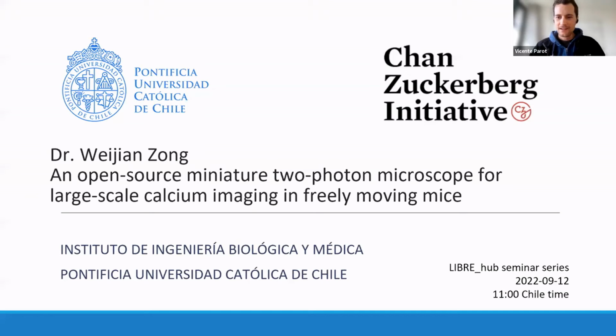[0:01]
Today, I'm thrilled to present Dr. Weijian Zong. So, Dr. Zong holds a degree in electrical engineering from Peking University. He did his PhD, obtained in 2017, where he focused on developing imaging technologies for neuroscience. He's currently a researcher in the Moser Group at Kavli Institute for Systems Neuroscience.
In the past few years, he led the development of free versions of miniature two-photon microscopes to record neuronal activity in freely moving rodents. Besides the miniature 2P microscopes, he also developed a series of other advanced fluorescence imaging tools across broad topics. His current research is developing all-optical approaches for characterizing functional connectivity in the medial entorhinal cortex. Dr. Zong also holds 6 invention patents in optical imaging.
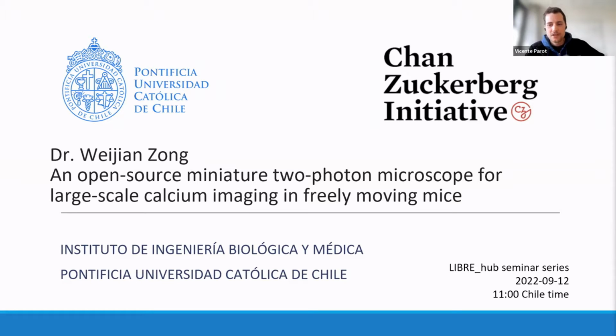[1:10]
His work on developing a new generation of miniature 2P microscopes was selected as China's top 10 scientific achievements in 2017. He has received awards such as the Shizan Pai Young Biophysicist Award in 2017 and became a Marie Sklodowska-Curie Fellow in 2019. So I'm very pleased that we have the opportunity to host his talk in this seminar, where he will talk about this open source miniature two-photon microscope for large scale calcium imaging in freely moving mice.
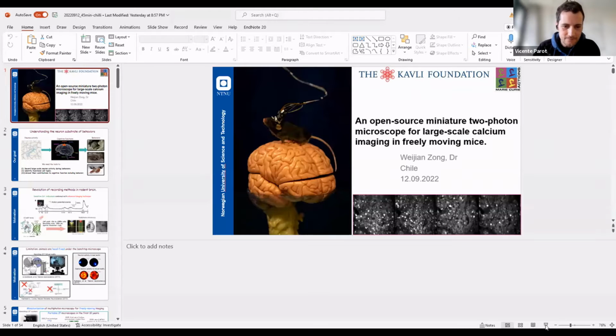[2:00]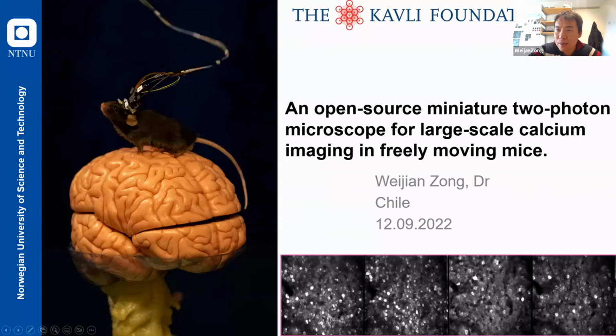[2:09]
Okay. We can see your PowerPoint screen now. Yeah. Can you hear me? Yes, we can hear you well. And now you see the slide, correct? Excellent. Go ahead. Thank you for the introduction, and so sorry for this mistake of the time zone problem, but I hope that the people who are interested can see the presentation later.
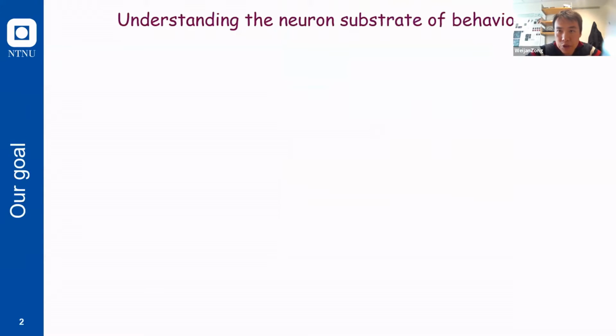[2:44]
And so it's my great honor to present our recent work on the development of this miniature microscope that can be used in the freely moving mouse. So I will start by introducing the purpose of why we want to make such a thing small.
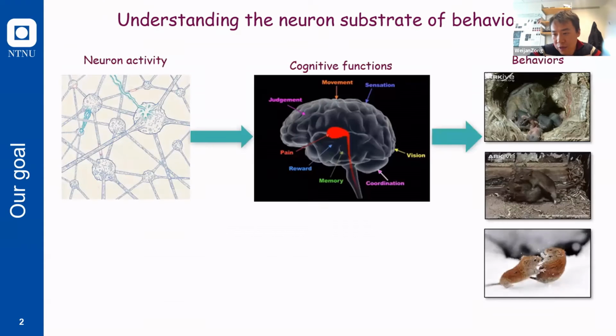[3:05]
So I think one of the major goals of 21st century neuroscience is to understand the neural substrate of behaviors. And most of the neuroscientists now have agreed that the behaviors,
Maybe I should have a pointer somewhere. We can see your mouse pointer. Oh, you can. Okay, great. Yeah. You can see the mouse here, right?
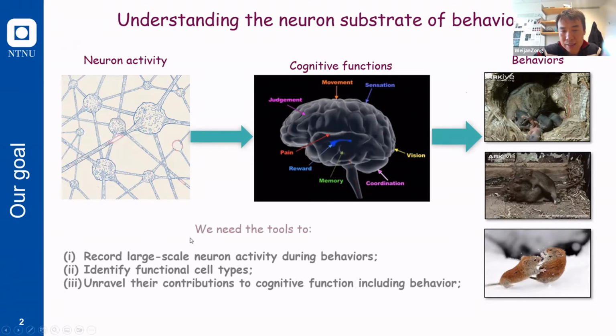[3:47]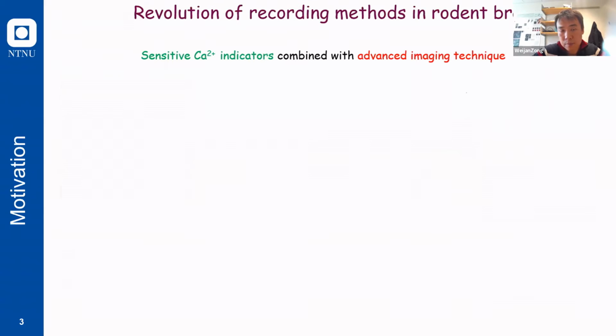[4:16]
Yes. Perfect. Okay. So the complex behaviors of mammals, such as mating, fighting, and social interaction, are generated by the functional brain, which in turn is produced by the activity of millions of neurons. Therefore, in order to understand the neural substrate of the behaviors, we need to record large-scale neuron activities during behaviors, and then identify the functional cell types, which means how these neurons are firing or tuning to specific behaviors, and then we can unveil their contribution to this cognitive function, including behaviors.
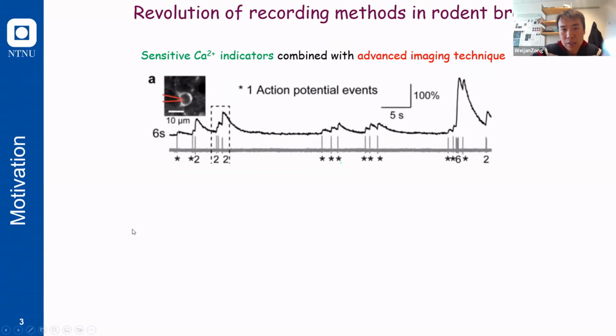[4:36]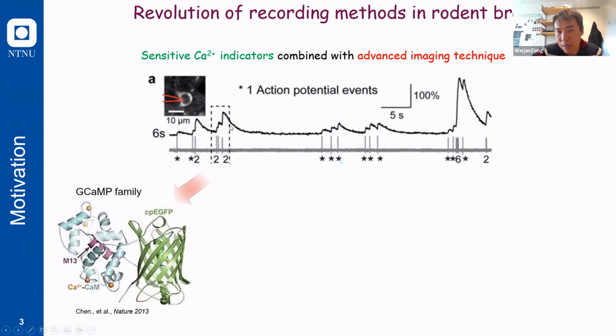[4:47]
So, therefore, scientists have looked for methods that record large populations of neural activities in the rodent brain for decades. And one attractive way to do this large population recording is calcium imaging. So the action potential of the neurons can induce an increase of the calcium concentration in the cell body. And this increase of calcium concentration, which is called a calcium transient, can then be reported by a sensitive calcium indicator, such as the famous GCaMP family.
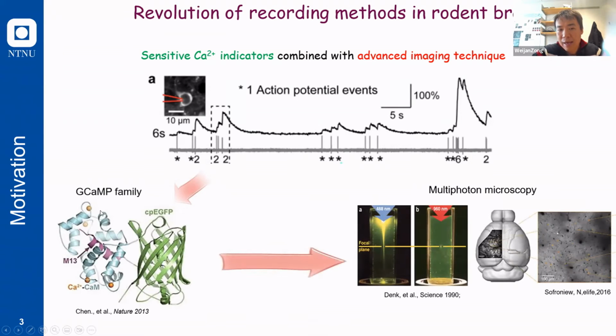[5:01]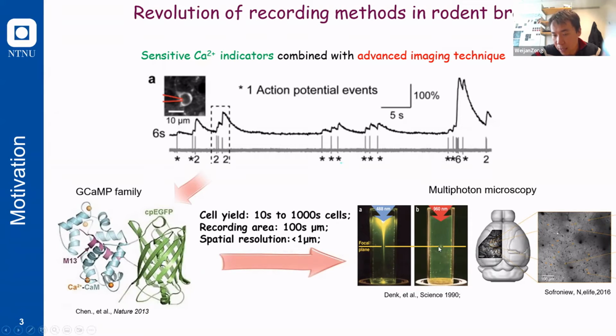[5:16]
And then the fluctuation of the signal from this calcium indicator can be recorded by the state-of-the-art microscope, such as the multi-photon microscopes. And you can see that the resolution of the multi-photon microscope is really high because it limits the background signals from the out-of-focus plane. So this is the one-photon focus, where you see a lot of signal in the background, and this is the two-photon focus, where there are no signals from the out-of-focus plane, which gives you really high spatial resolution and good optical sectioning capabilities. And then the cell yield of this method can be over thousands of cells with a spatial resolution that is less than 1 micrometer.
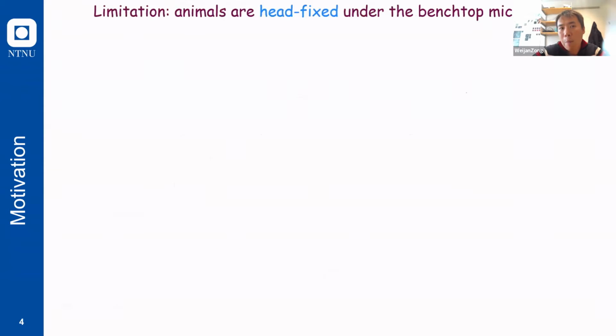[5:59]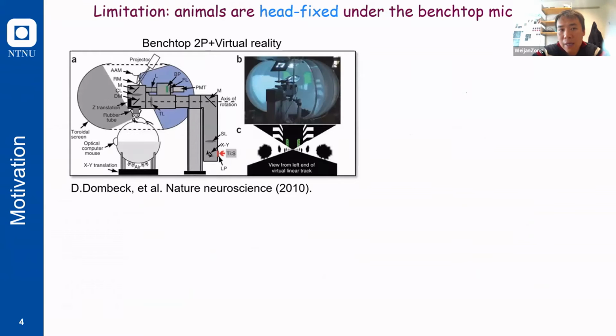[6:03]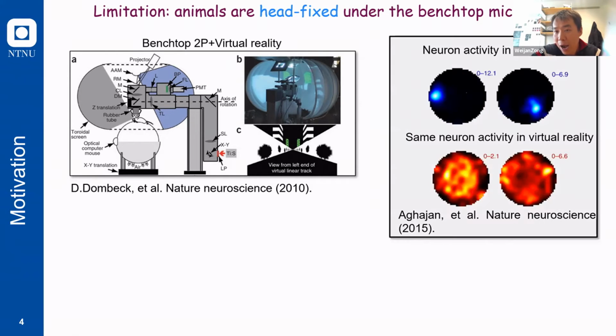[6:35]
However, one biggest limitation of the traditional multi-photon microscope is that the system is really complex and huge. So the animals had to be fixed under the microscope while the recording is ongoing. And to mimic the real environment that the animals experience, researchers usually build a virtual reality surrounding these systems, so that they can mimic the environment that the animals experience every day. However, people have found that even if you can build a virtual reality, the neural activities in the real world are quite different from those of the same neurons in this virtual reality.
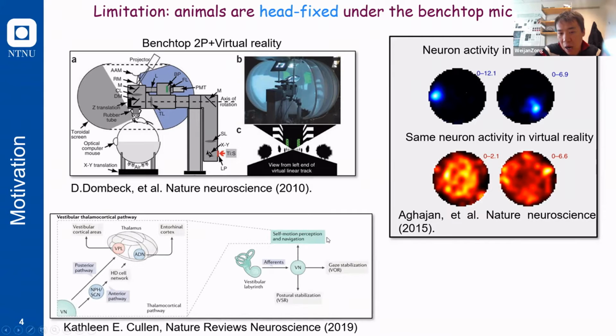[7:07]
You can see these two examples, which are place cells in the hippocampus, which have a very clear firing field in the real world, but their firing is much more messy in virtual reality. We believe this is because when the animals are fixed, you actually remove a lot of sensory input, such as vestibular feedback from the ear or all of this whisker touching.
And your head direction system is also not working because the animals are fixed. The animals cannot freely move their heads. So this network doesn't give any input to the space representation. And all of that makes this firing in virtual reality totally different from the real world.
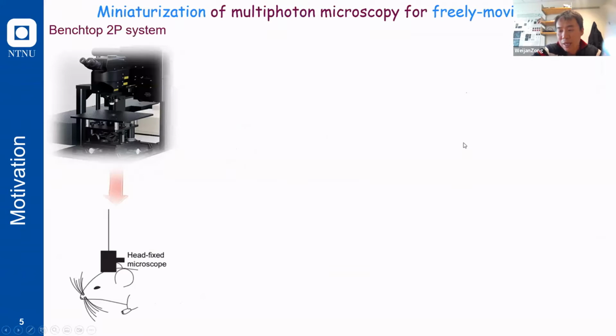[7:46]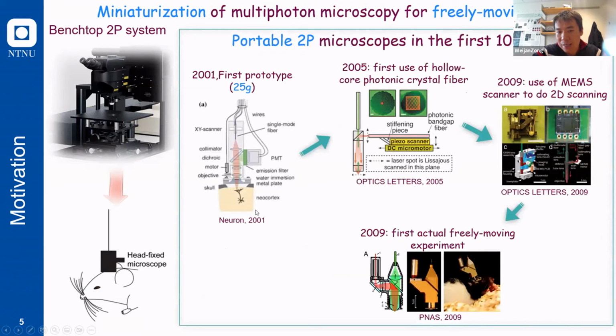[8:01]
Therefore, scientists started to develop the miniature microscope that can be mounted on the head, so the animals can freely move in the environment while we record the activities. And the story started in 2001. The first prototype was published by the Denk group, which are the pioneers of the two-photon microscope.
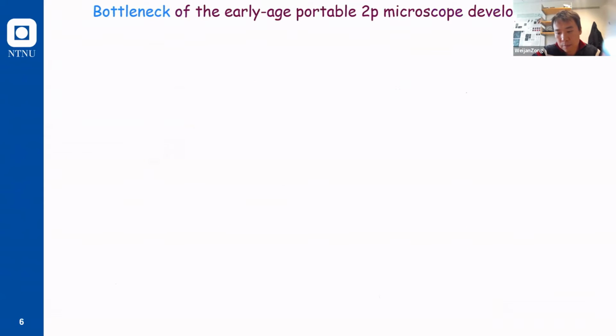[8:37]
But at the beginning, this miniature microscope was still quite heavy and could not be used in small rodents such as mouse. Several works followed up and also developed different designs, but still none of them were really working in freely moving animals.
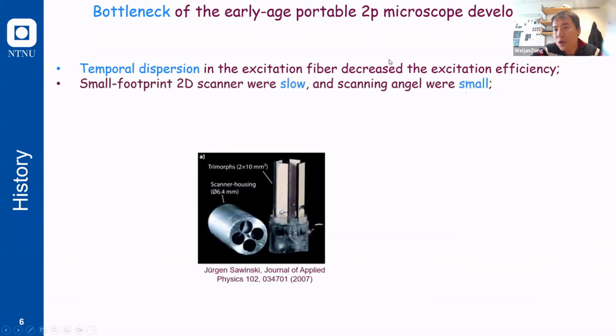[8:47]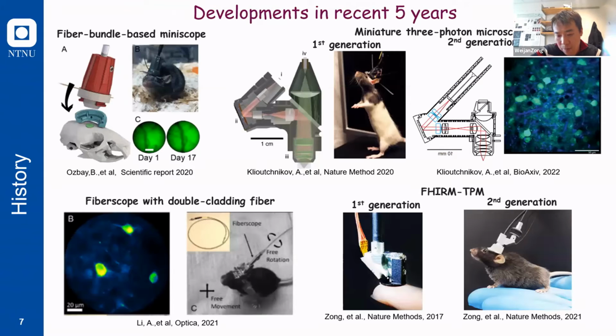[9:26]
The problems of these early-age miniature microscopes are, first of all, the dispersion in the excitation fiber, which decreases the excitation efficiency. So you cannot have really high power pulses that can be used to do multi-photon imaging. Also, the small 2D scanner, which is necessary to do raster scanning in the two-photon microscope, was quite slow, and the scanning angle was also very small at that age. So you cannot have a really big field of view to image many neurons. And moreover, there was no suitable miniature Z scanning device that can be integrated into a Miniscope to change the focal plane.
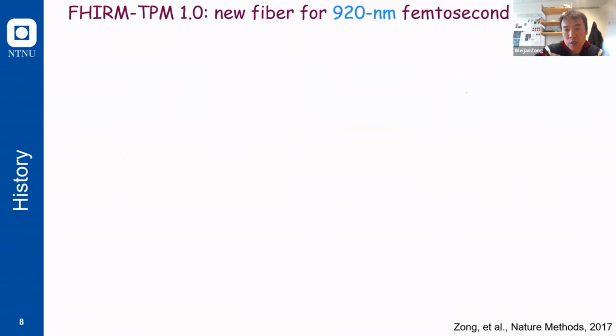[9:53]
Because miniature optical and electrical device development has been really fast in recent years, you see emerging new technology published for these miniature devices. I do not have time to go through all of these beautiful works, but I will only mention two of the works that I was involved in when I was in Beijing. So in 2017, we published our first version of this miniature two-photon microscope.
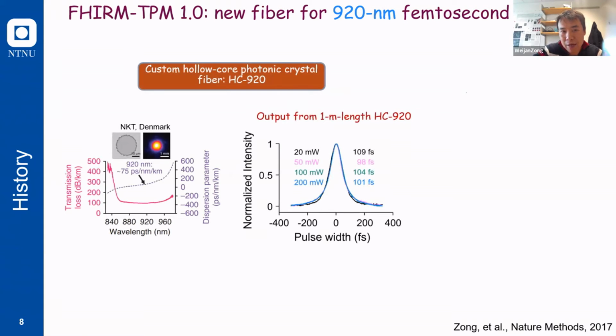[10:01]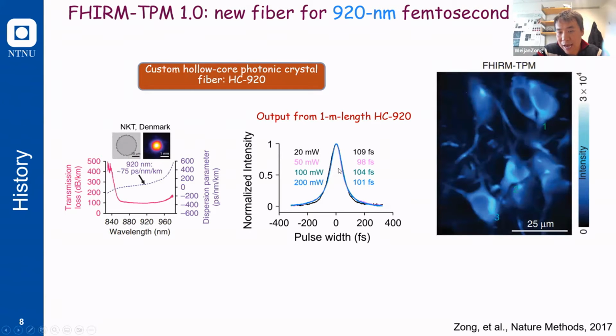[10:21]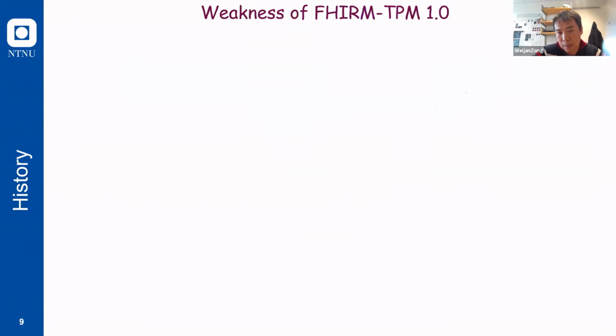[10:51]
In this microscope, we developed a new type of hollow-core photonic crystal fiber that can deliver a sub-100 femtosecond laser at 920 nanometers, which is the best wavelength to excite the GCaMP indicators. You can see that we can transfer more than hundreds of milliwatts of laser without expanding the pulse. The pulse still kept about 100 femtoseconds after 1 meter of this fiber. With this new fiber, we can have really high resolution imaging in the Miniscope. You can see that single cells can be well distinguished from each other.
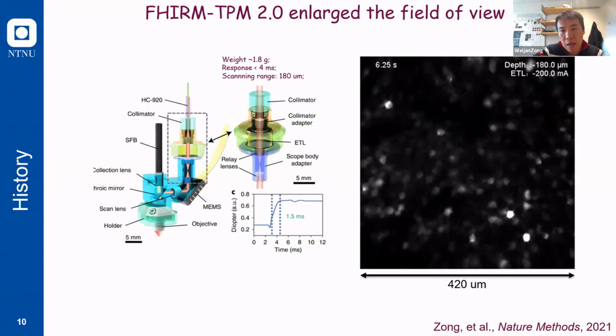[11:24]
However, one biggest problem of this first version of the Miniscope is the small field of view. You can see that this is the maximum field of view we can achieve with this Miniscope, so only a few neurons can be detected. And also, we didn't achieve any Z-scanning function in this Miniscope. So we can only mount the scope in one certain plane, and then that's it. We cannot change the focal plane. In order to solve these two problems, we published our second version of the Miniscope in 2021.
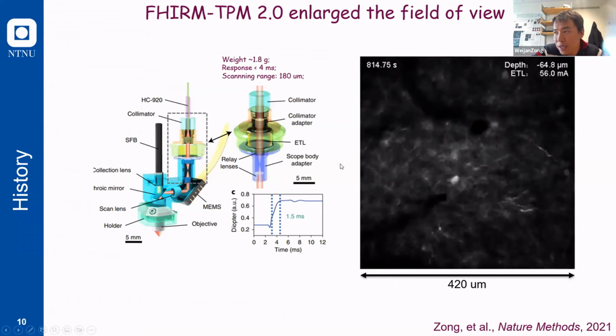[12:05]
This time, we expanded our field of view to more than 400 microns, so hundreds of neurons can be recorded from a single plane. We also produced a prototype of the scanning module in this Miniscope by using the smallest commercially available electrically tunable lens, which can change the focal plane when you give different currents. With this small Z-scanning module, we can change the focal plane over a range of 180 microns. Again, you can see that neurons in different layers can be detected with this Miniscope.
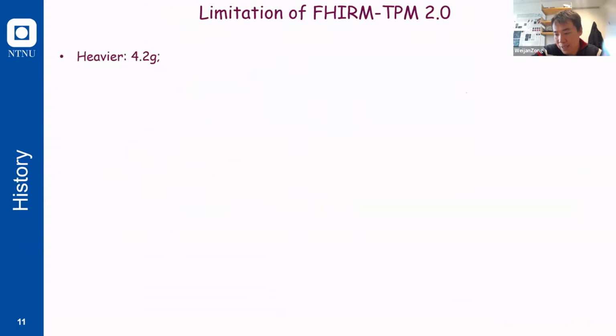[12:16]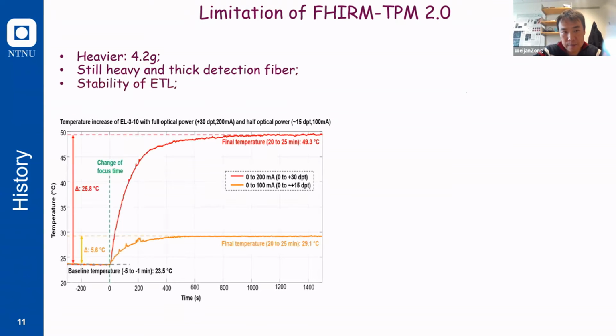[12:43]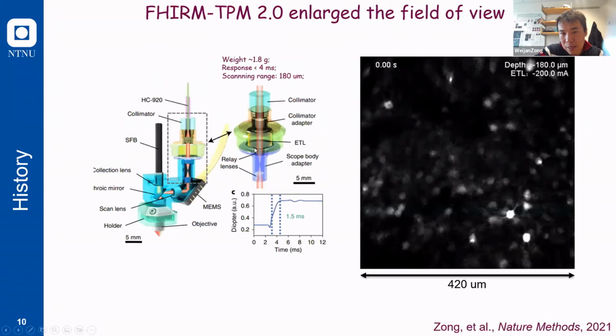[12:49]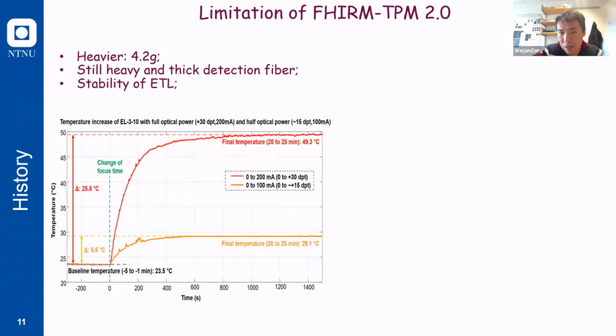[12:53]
However, the problem is that in order to increase the field of view and introduce this scanning module, the weight of this Miniscope is much heavier than the first version, reaching 4.2 grams. Also, this scope had to use a very heavy and stiff detection fiber to collect enough photons, which restricts animals' behaviors. Another problem is that this electrically tunable lens has a really severe thermal effect, which means that when we drive it to its maximum output power, we have to use 200 milliamps, and that increases the temperature by about 25 degrees after only about 5 or 10 minutes.
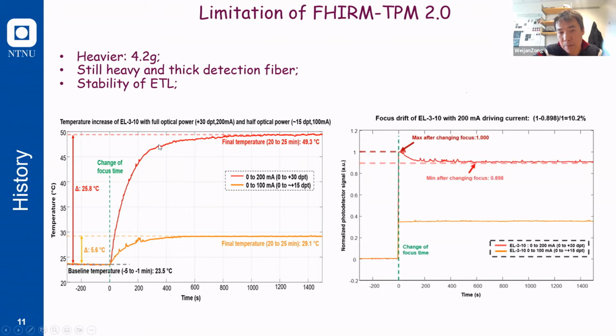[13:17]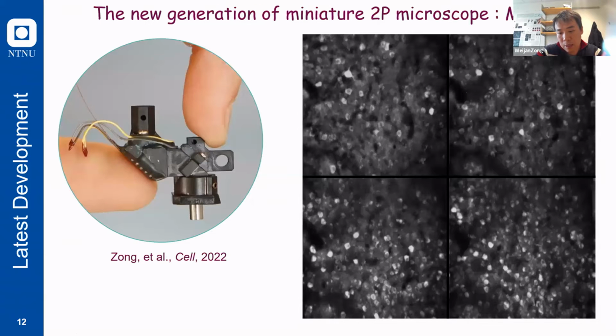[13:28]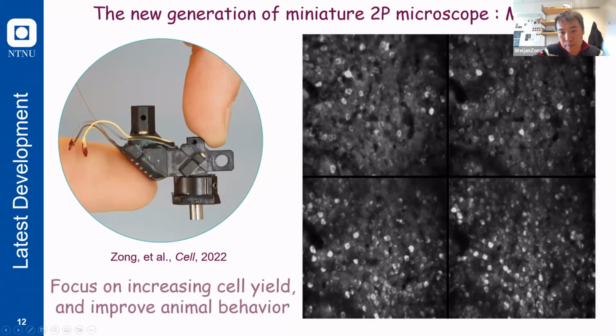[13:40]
And this increasing of temperature will drift your focal plane, which means that you can never track the same cell for more than 10 minutes. All of these problems motivated us to develop a new version of the miniature microscope, which was published this year, and we call it Mini2P.
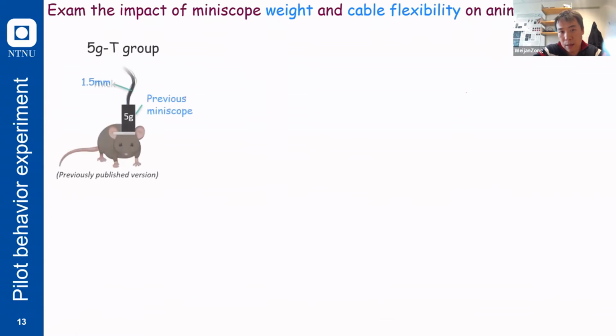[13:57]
This time, we focus not only on increasing the cell yield, but also on improving the animals' behavior, so we can really use it in freely moving animals to do real neuroscience studies. So first of all, we want to explore the real impact of the scope weight and the stiffness or thickness of the fiber on the animal behaviors.
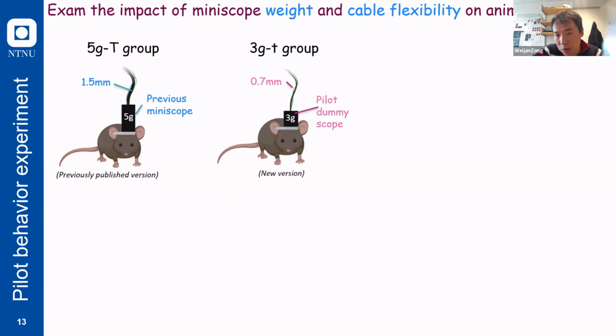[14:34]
In order to do that, we did a pilot experiment using a group of animals that was mounted with a 5-gram dummy scope, the same weight as our previous version of the Miniscope, with a 1.5 millimeter thick cable, which is also the same as we used in version 2 of the Miniscope we published before. We also had a group of animals mounted with a 3-gram dummy scope and a 0.7 millimeter thick cable, which we believe is producible from the engineering perspective. And also a control group without any scope or fiber.
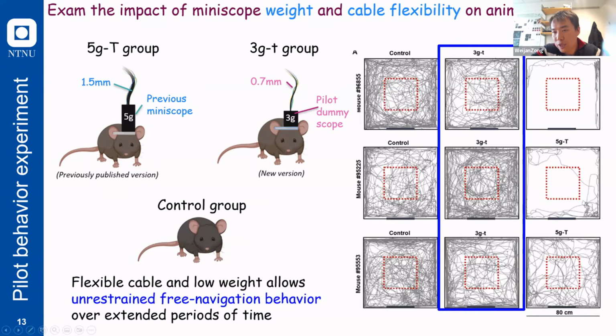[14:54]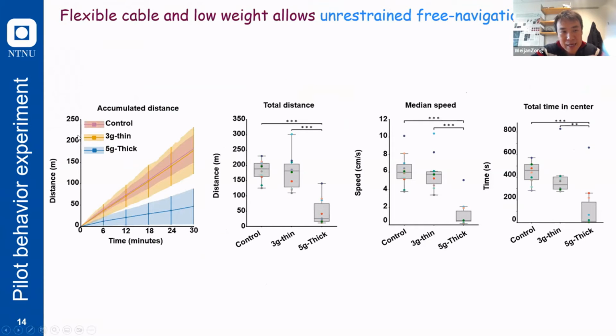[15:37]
From this result, you can see that the animals mounted with the 3-gram miniscope and a 0.7 millimeter thin cable have a quite similar exploration ratio compared to control groups. This is an 80 centimeter box, and all of these gray lines are the trajectories of animals in a 30 minute exploration experiment. The animals with the 5-gram miniscope and a thick cable, which is 1.5 millimeter in diameter, have a much lower exploration ratio, which shows that this weight of the scope and cable indeed impact animals' behaviors.
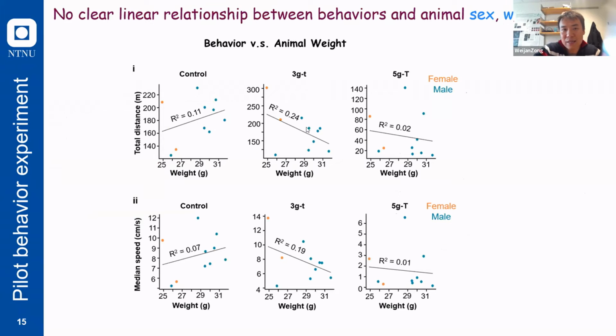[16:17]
We also see that this behavior is not an artifact due to the age or the weight of the animals, because animals with weights ranging from 25 grams to 31 grams were involved in these tasks, and you see there is no strong relationship between the weight and the task performance. And we also included females and males in the experiment to show that this is also not an effect of the sex of the animals.
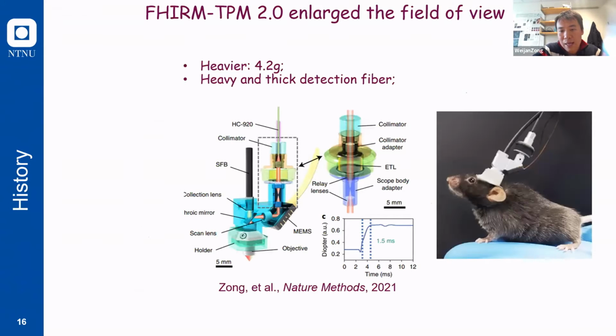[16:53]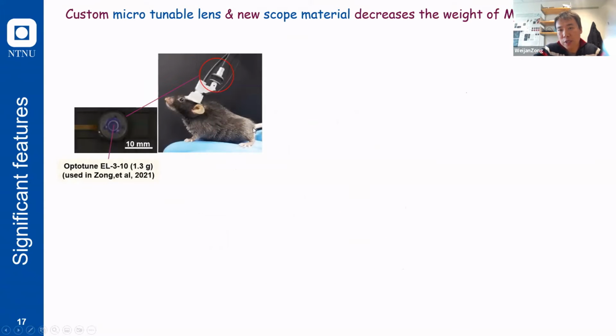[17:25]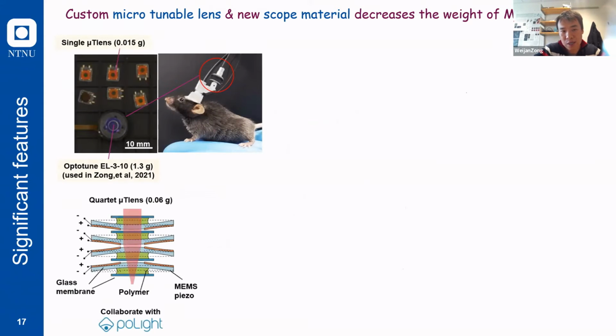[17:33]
Then we know that if we can decrease the weight of the scope to 3 grams, and decrease the diameter of the cable to 0.7 millimeter, we should ensure the most natural behavior of animals, at least in these open field tasks. Then we went back to the second version and found that the main additional weight of this miniscope came from the scanning module. So in order to decrease the weight of the microscope, we need to change this electric tunable lens to a smaller device.
Therefore, we collaborated with a company in Norway to invent a new version of the miniature tunable lens, which we call the micro T lens. This micro T lens uses a new technology called MEMS piezo to change the curvature of one lens, and this change of curvature can converge the light and change the final focal plane of the microscope. A single micro T lens only weighs 15 milligrams, and in order to increase the focal focusing range, we stacked 4 T lenses together to make this quartet micro T lens.
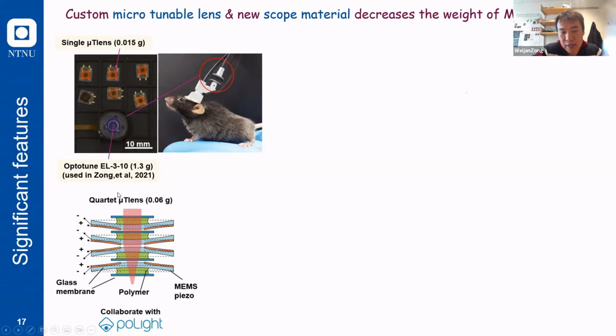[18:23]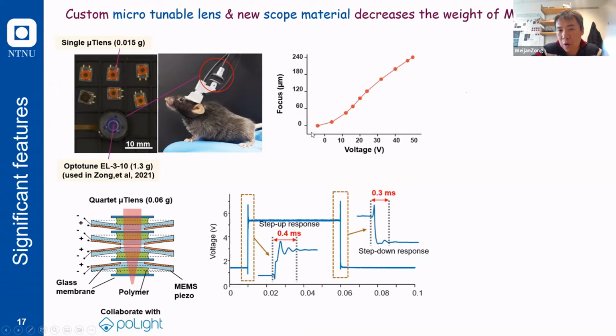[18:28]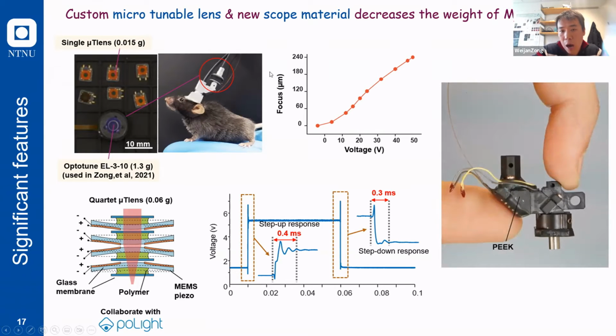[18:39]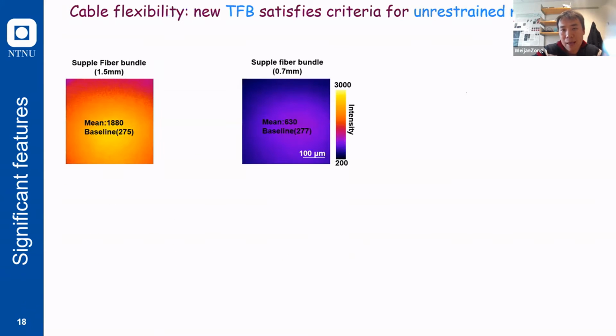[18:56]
Then, as the second step, we wanted to decrease the diameter of the fiber. First of all, we tried using a smaller fiber bundle, which is the same one we used in this pilot experiment, which was eventually a failure, because you can see that the collection efficiency also decreased compared to this supple fiber bundle. And you can see this is the signal from a uniform fluorescent sample.
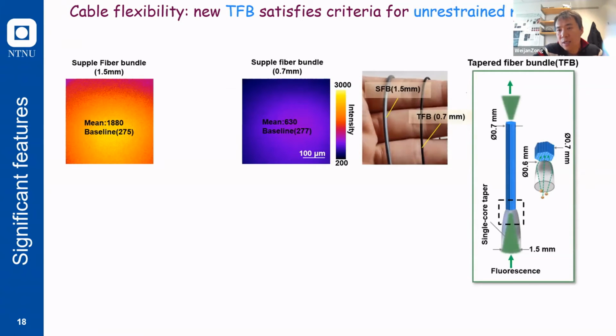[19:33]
To lift up this collection efficiency, we added a tapered fiberglass on the end of this thin fiber, which has a bigger end of 1.5 millimeter and a small end just the same size as this 0.7 millimeter fiber. The fluorescent photons are collected from the big end of the glass, and after several total internal reflections are collected through the small end into this fiber bundle.
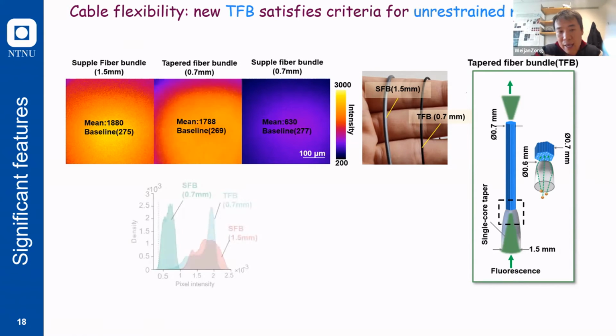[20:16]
Because this tapered fiberglass has a focusing effect, it can bring up the collection efficiency of this tapered fiber bundle to a similar level to the 1.5 millimeter fiber bundle, which is much higher than a pure 0.7 millimeter fiber bundle. And now we can use this thinner fiber to do two-photon imaging in the Miniscope.
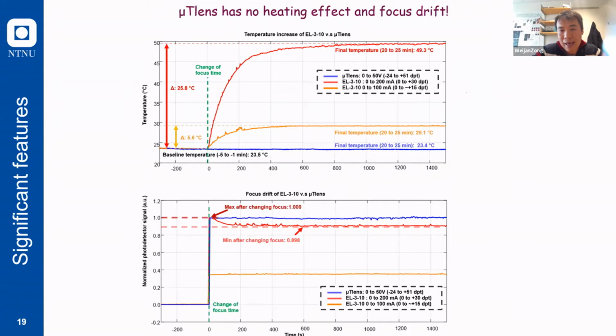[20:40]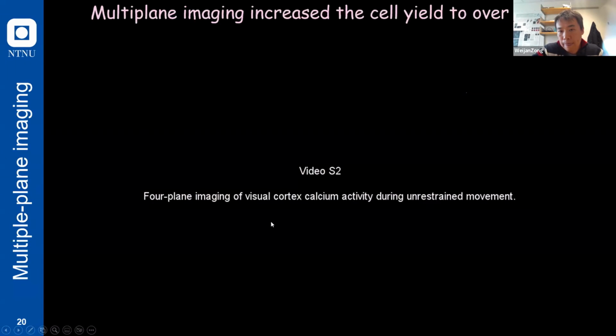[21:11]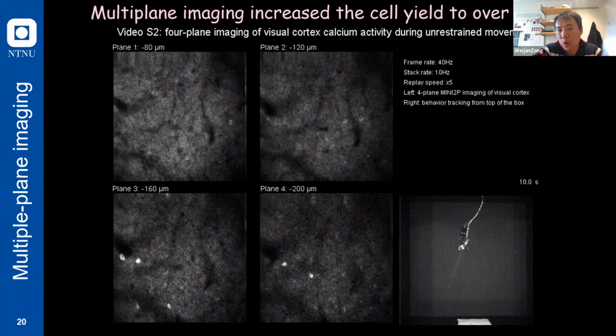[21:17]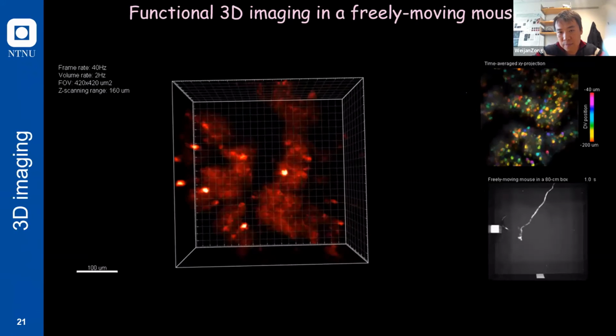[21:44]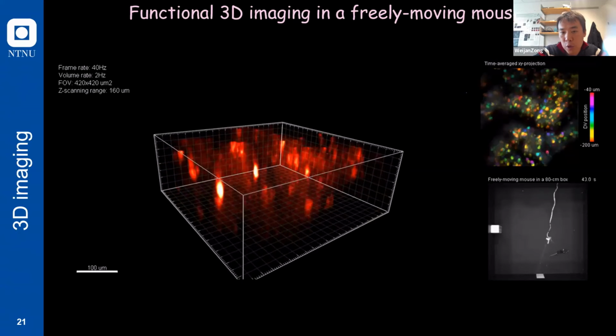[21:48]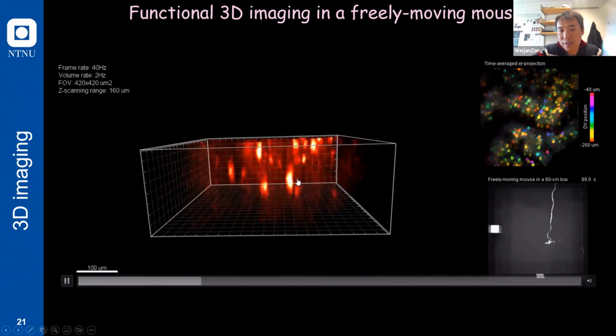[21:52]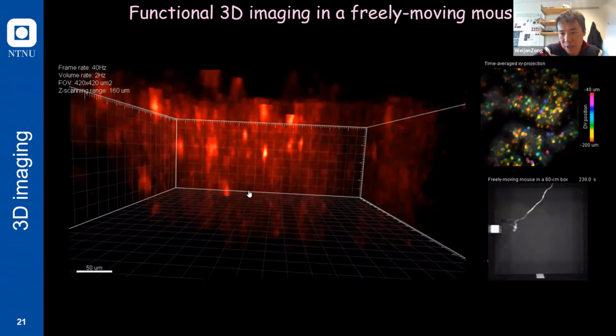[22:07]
And you can see that we can now simultaneously record a full plane of neural activity over 30 minutes in freely moving animals. And the neural activity from a single plane is quite separable, which means that we have really good resolution as well as quite stable focusing capabilities. And with this fast Z-scanning module, we can also do real 3D functional imaging in freely moving animals. From this video, you can see that the neural activity from different neurons can be well separated in different layers of the brain, and the positions of the neurons are quite stable, which shows the stability of our Z-scanning function.
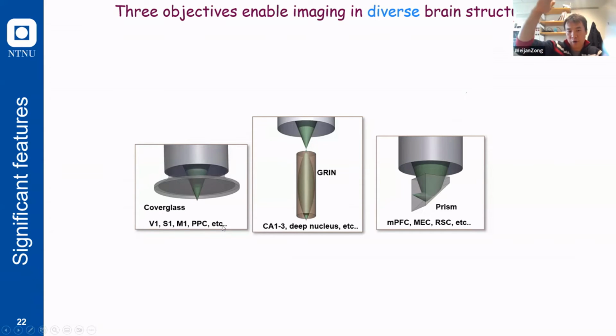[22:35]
And in order to use it in different brain regions, because of the geometry of brains, we have to use different optical access methods. In this way, we developed 3 different kinds of objectives. One can go through a cover glass, which can be used in the cortex on the top or superficial part of the brain, such as the visual cortex, sensory cortex, or motor cortex. Another objective can be combined with a GRIN lens, which can be used in deeper brain tissues, such as the hippocampus. And a third objective can be used to image through a microprism.
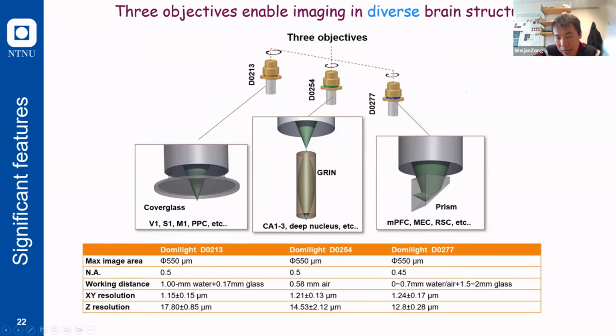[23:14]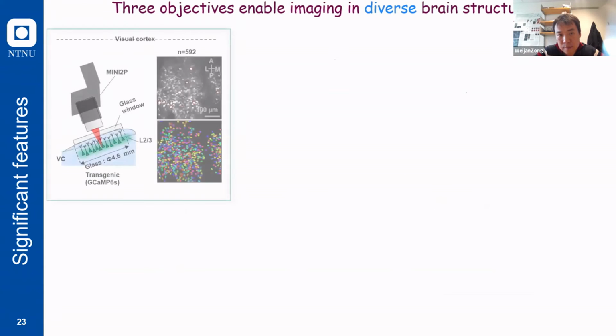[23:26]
Then the Miniscope can be used in the cortex located on the side of the brain, such as the PFC or medial entorhinal cortex. And these 3 objectives are interchangeable, which means that we can use the same Miniscope to image different brain cortices and brain regions by just plugging in and out different objectives.
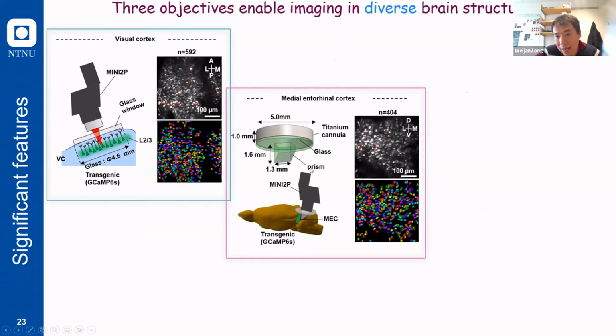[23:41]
And to show the power of these different objectives, we successfully recorded more than hundreds of cells in the visual cortex by using just a cranial window on the top of the brain, and hundreds of cells from the medial entorhinal cortex, which is located on the side of the brain, so we have to use a prism to access it, or in the hippocampus, which is in a deeper brain region, so we have to use a GRIN lens to relay.
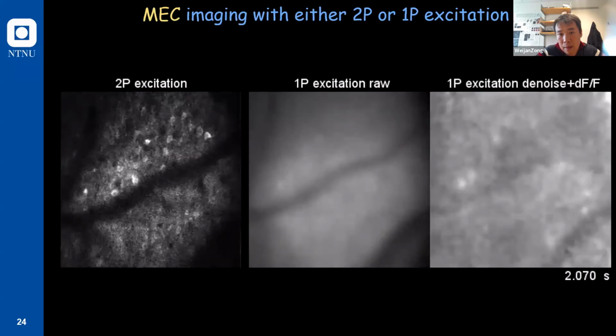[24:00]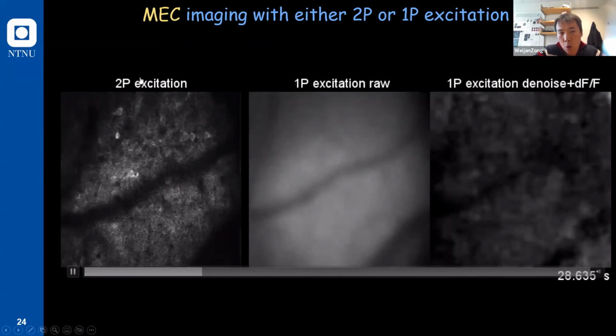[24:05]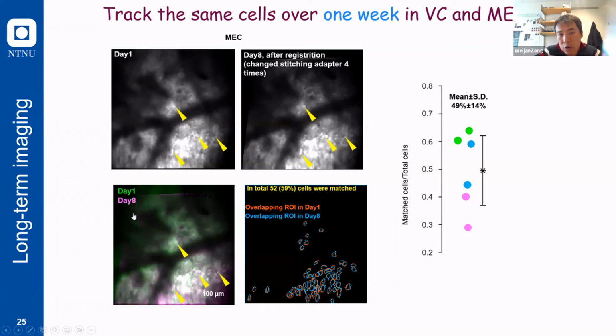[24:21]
And you can see that compared to miniature 1-photon microscopes or miniature 2-photon microscopes, we get quite a bit higher resolution and signal-to-noise ratio in exactly the same region and with the same group of cells. And we can also track the same cells in long-term recording. In this example, in the medial entorhinal cortex, we tracked about 50% of cells, and here more than 59% of the same cells over 1 week.
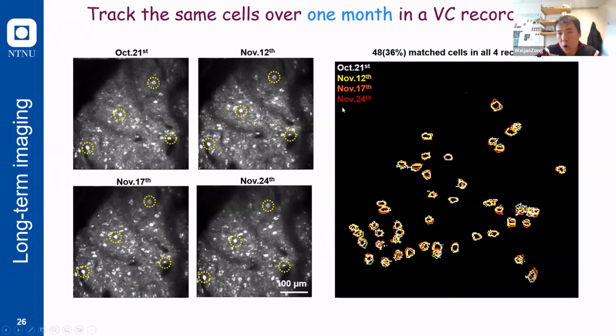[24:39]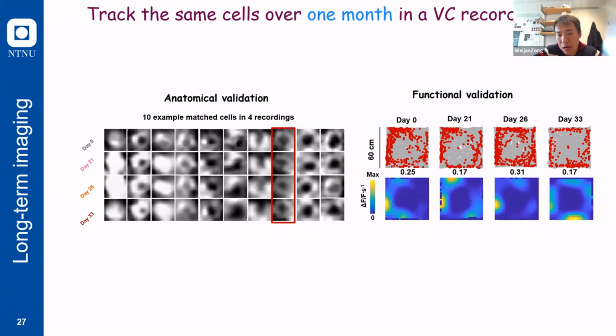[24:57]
And in these recordings, we continuously recorded the same cortex over 1 month, and about 36% of cells can be refound in all these 4 recordings. We also confirmed that not only the anatomical shape of these registered cells but also their function are quite stable. You can see that these are the same cells recorded on 4 days across 1 month, and their spatial tuning is quite stable, which confirms that these are exactly the same cells.
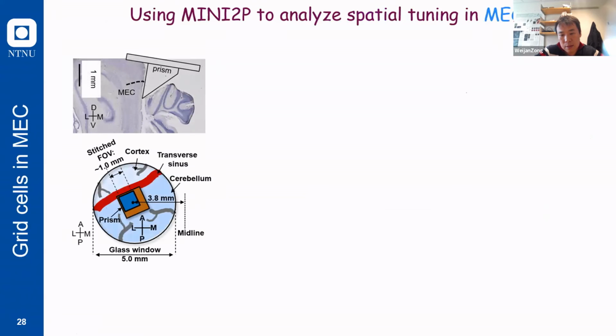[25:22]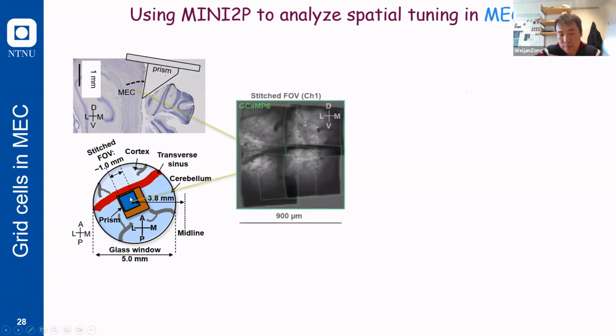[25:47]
And as I mentioned, we want to use this method in different cortices, and with this diverse brain cortex, one of the most difficult regions is the MEC. Because the location of the MEC is on the side of the brain, just in front of the cerebellum, we have to use a prism to access these regions.
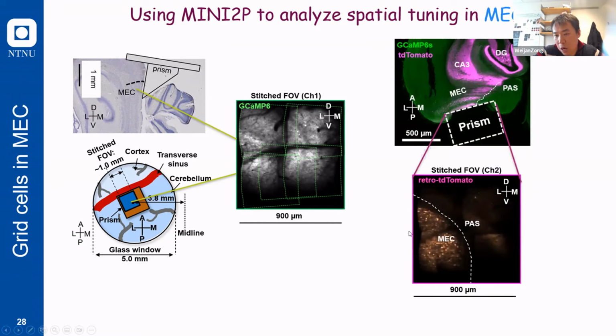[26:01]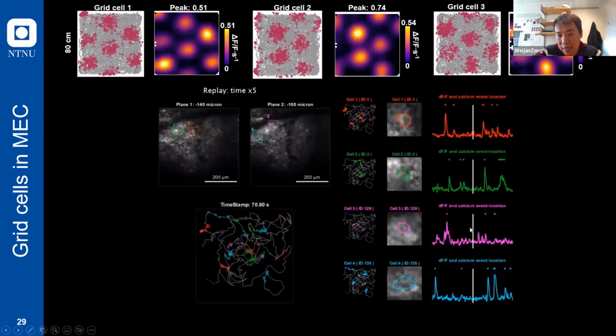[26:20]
And now with our new Miniscope, we're able to record more than 900 micron field of view by stitching 4 recordings together. And we confirmed that our imaging is located on the medial and dorsal part of MEC by injecting a retrograde virus in the CA3 and DG that only projects back to the MEC, but not the surrounding parasubiculum regions. And you can see that now we are able to see very, very beautiful grid cells, which were found in MEC, which electrophysiology recorded before.
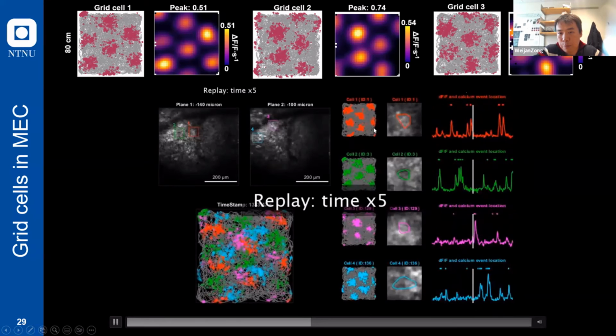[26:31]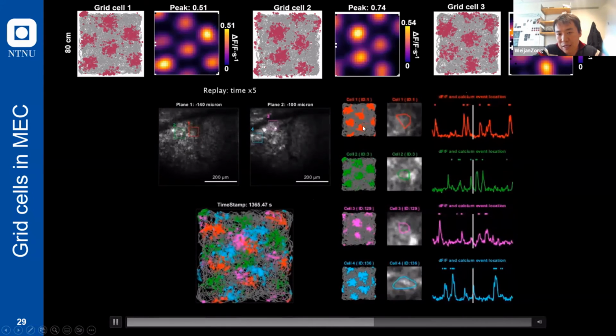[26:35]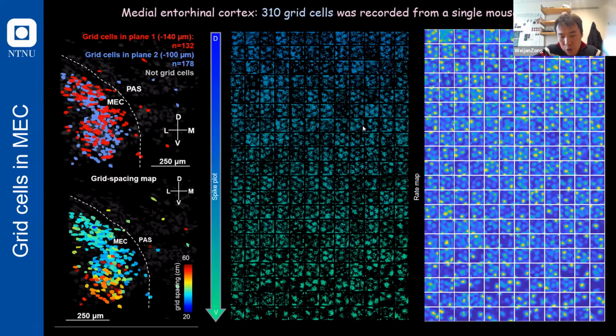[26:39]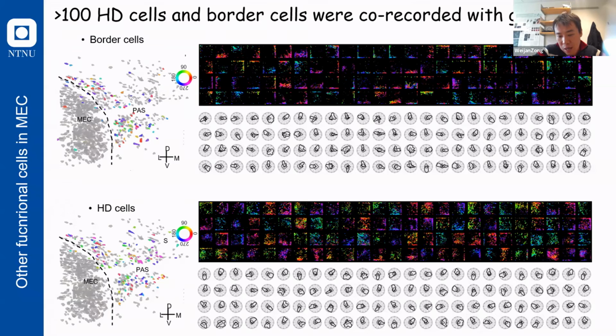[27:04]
And you can see this beautiful grid cell pattern, which just emerged after a few minutes of recordings. If you remember, at the beginning, when people discovered grid cells with tetrodes, every time they could only record a few grid cells. And now with our new miniature 2-photon microscope, we are able to record more than 300 grid cells in this example, within 1 animal. And with these grid cells, we also recorded more than 100 border cells and also hundreds of head direction cells.
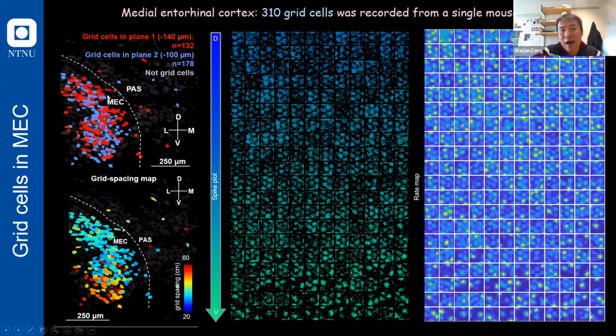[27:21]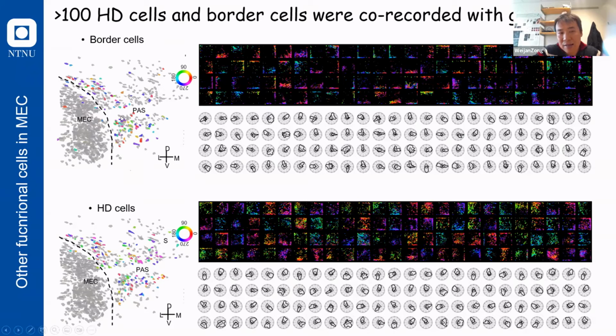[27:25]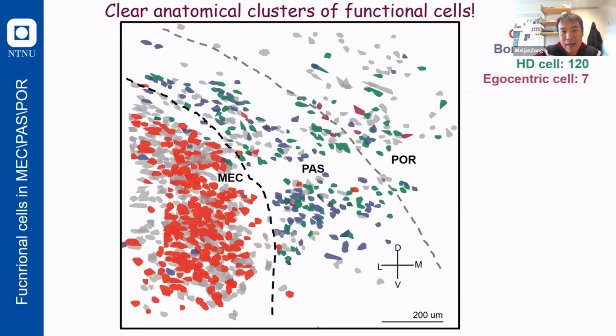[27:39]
And one striking thing you can see is that all of these grid cells are highly confined in the MEC region, but the other cell types, such as border cells and head direction cells, are located separately from these grid cells, in the surrounding parasubiculum. And if you overlap all of these spatial tuning cells together, you can see this clearly topographic distribution: the grid cells are close to each other and in a cluster in MEC, and all the other cell types like border cells, direction cells, and some egocentric cells are mixed in other places.
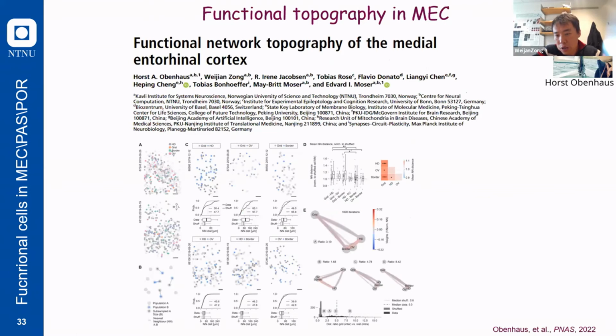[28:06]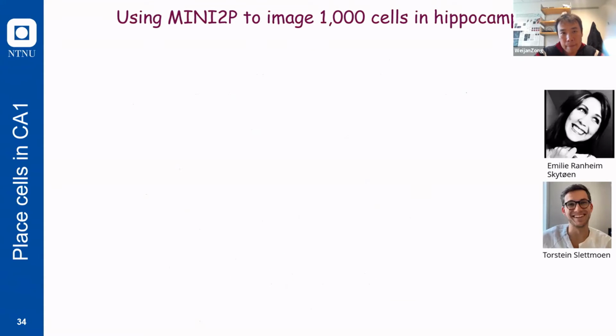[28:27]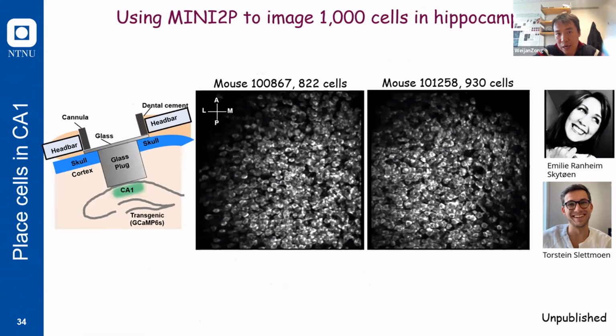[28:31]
And we also published a paper that specifically focuses on studying this functional network topography, and this was published at the same time as these technical papers. If you are interested in how we quantify this organization of different cell types, you can check this paper. And we are now also able to use this Miniscope to record very highly dense cells in MEC and in hippocampus. You can see that in the 2 examples, almost 1,000 cells can be recorded in a single field of view. You can see how dense these cells were labeled and recorded. I think you almost record every cell in this field of view.
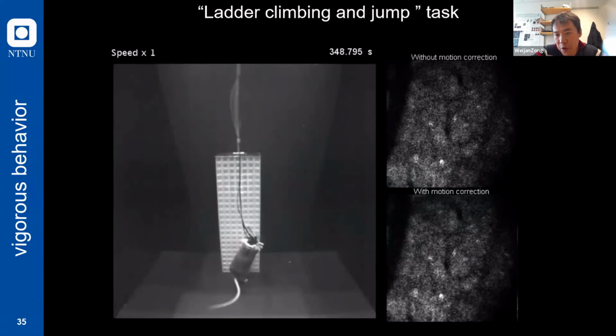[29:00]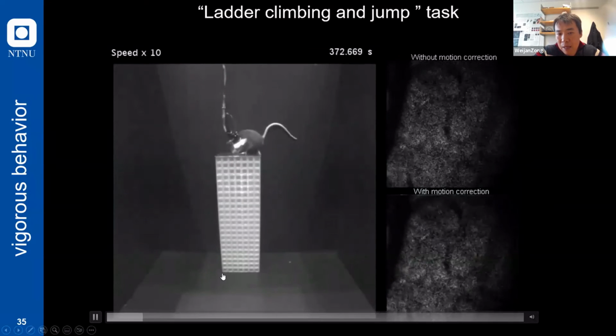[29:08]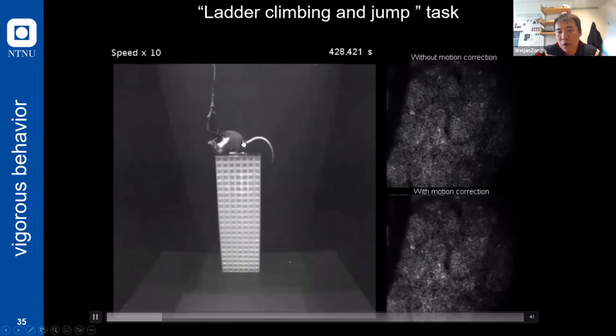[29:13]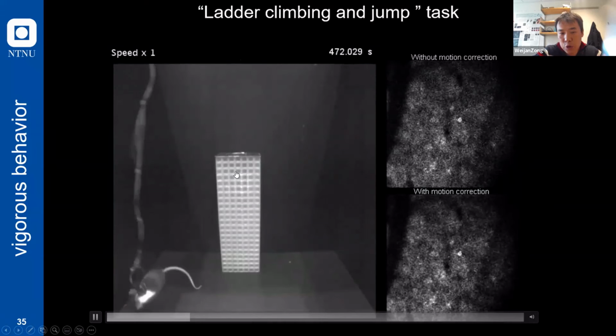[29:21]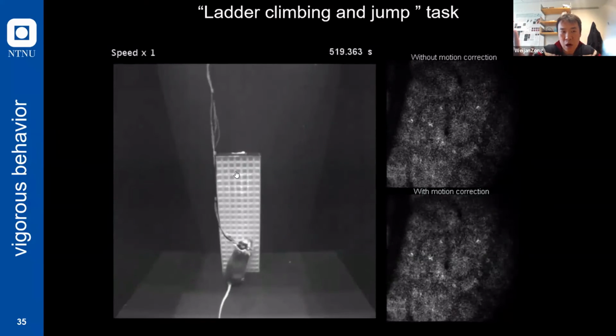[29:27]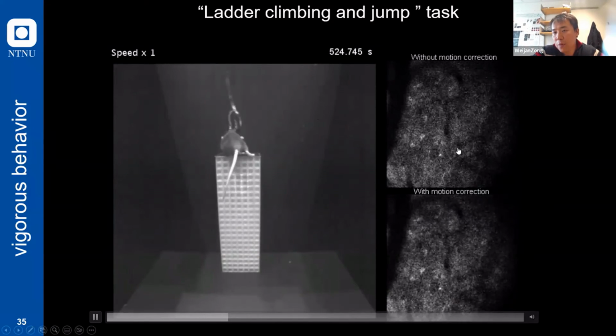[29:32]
And this is one of my favorite videos. I really want to show you that in this task, we train the animals to climb a tower to get a reward, and the animals have to voluntarily jump down from these towers to get another reward. The thing I want you to focus on is that even in this climbing or jumping or all of these vigorous behaviors, our recording can still keep quite stable. You can focus on this. This is a raw video without any motion correction.
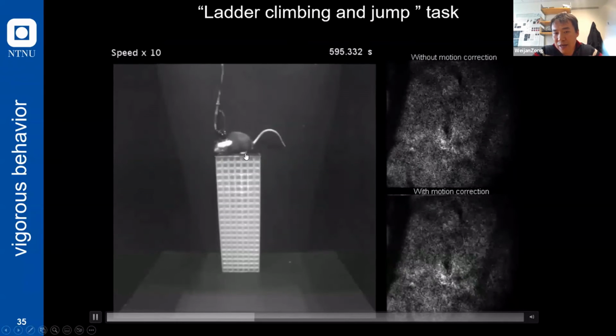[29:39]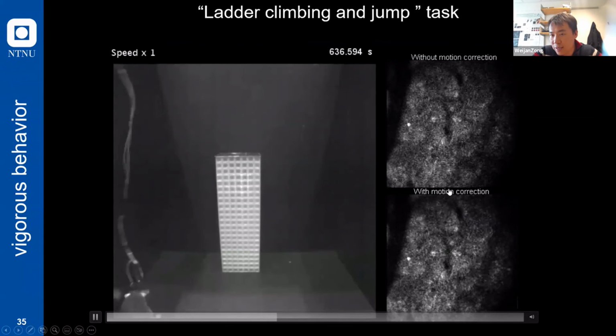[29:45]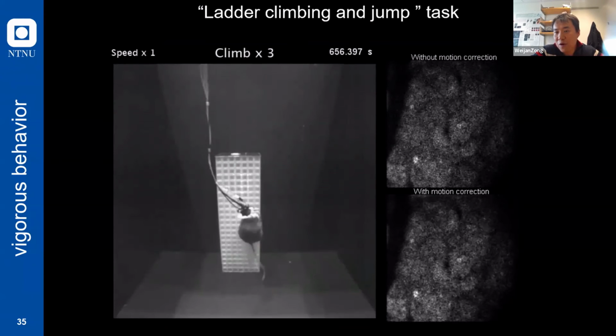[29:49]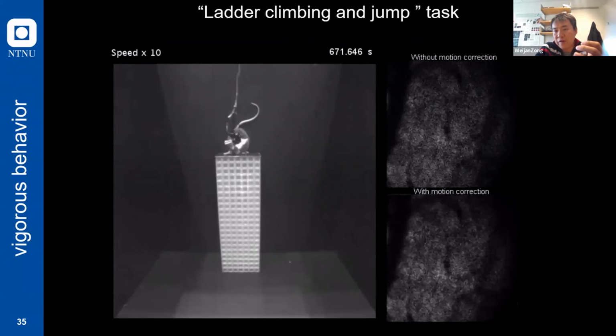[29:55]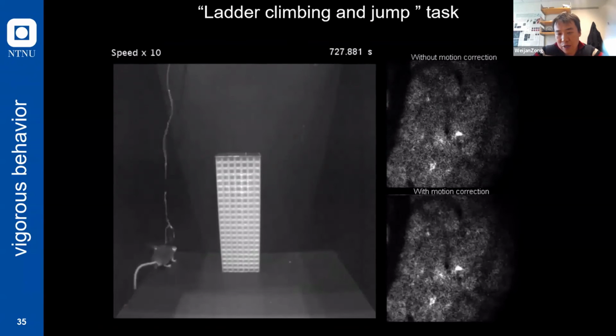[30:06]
And when the animal, after he eats up all the sugar reward, he will jump down from this platform. You can see now that even in the jumping, we can still see very, very clear signals from single neurons, which shows the stability and the performance of our Miniscope, and which tells you that we now can do a lot of behavior studies with our technique.
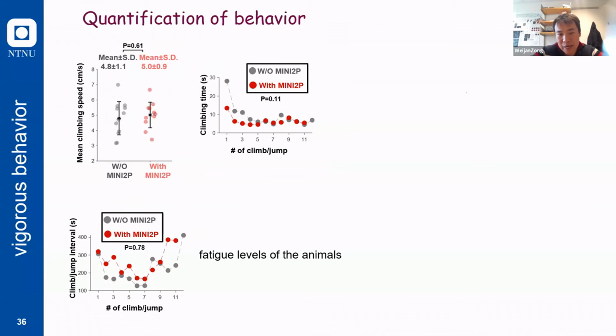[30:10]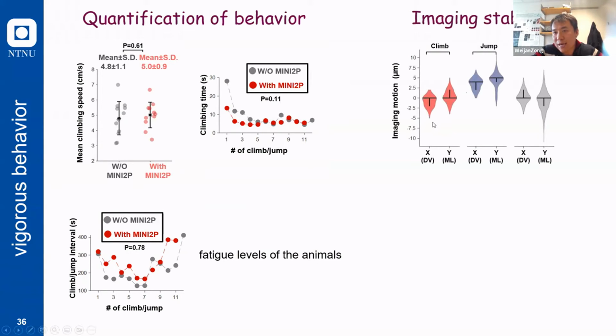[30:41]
And we quantified these behaviors. No matter if the animals are with the Miniscope mounted or without the Miniscope, they have quite a similar climbing speed, and they have a quite similar evolution of the time they need to climb up this tower, as well as the interval between each climb and jump trial, which means that our scope didn't have any impact on animal behaviors. And we also see that the image stability is quite high. Even in these jumping steps, the motion between adjacent frames is less than 10 micron, which is even better than head-fixed animals.
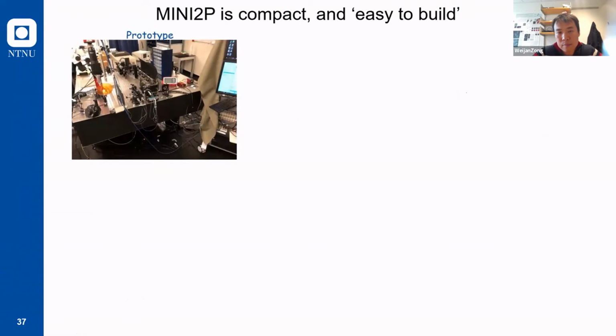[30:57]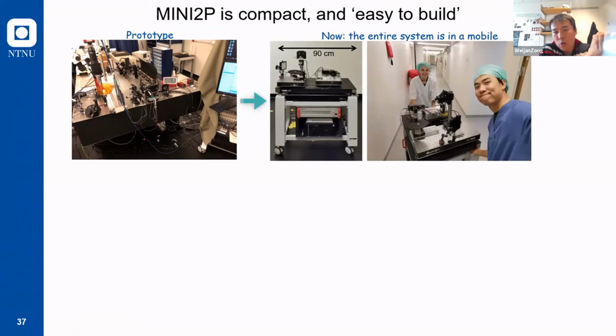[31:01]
And now we think that we not only want to build up these systems in our lab, we also want to spread them into the world. So we actually spent 1 more year just decreasing the size and improving the compatibility of our systems. You can see this is the prototype, the first version of our Mini2P, and now this is the final version, where everything, including the computer and the laser driver, can be integrated into this small cart, and this whole system can even be moved to different rooms. So you can use one system to do different tasks.
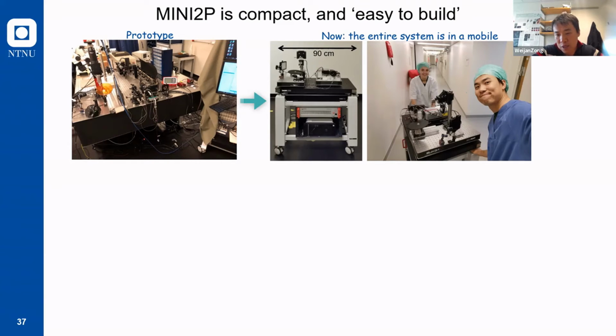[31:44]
And it can be used in different research projects. And now we have also decreased the complexity of making one Miniscope, and the total time needed to build one Miniscope is only 2 days. Actually, most of the time you are just waiting for the glue to dry. So the actual working time is less than 2 hours. So in principle, you can build Miniscopes in the lab like a factory.
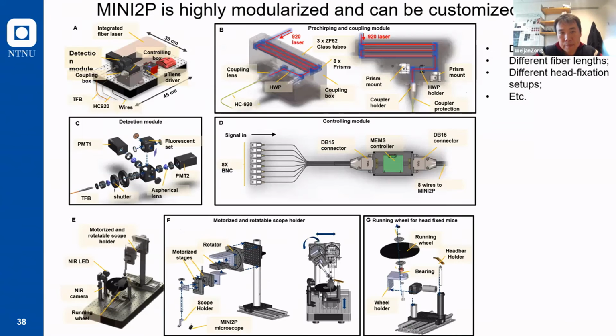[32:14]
And also, all of the components in the system are modularized, which means that you can build up one module. And if you want to modify your head fixation or the detection module, you just need to remove this module, make a new module, and plug it in. So this really makes the system very flexible and can be customized in different research.
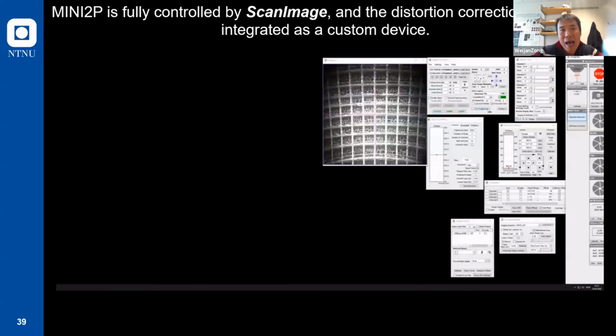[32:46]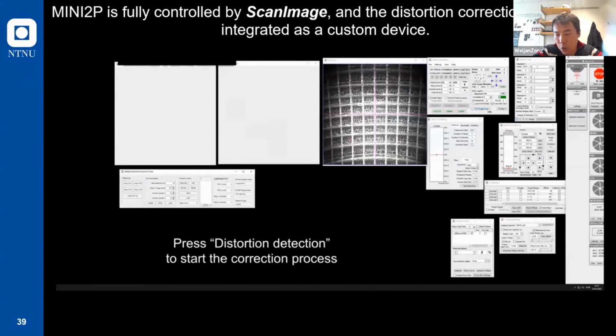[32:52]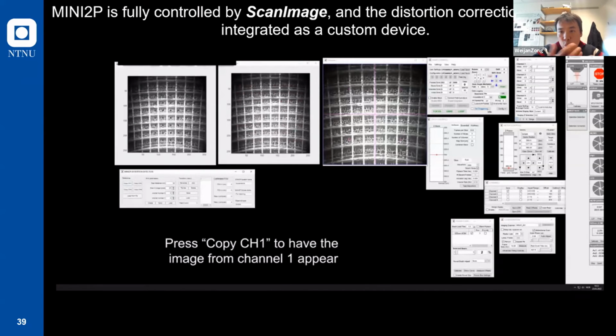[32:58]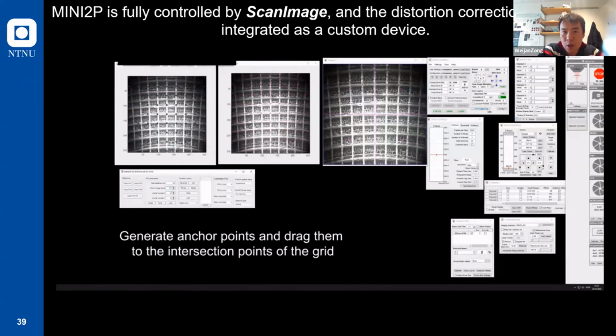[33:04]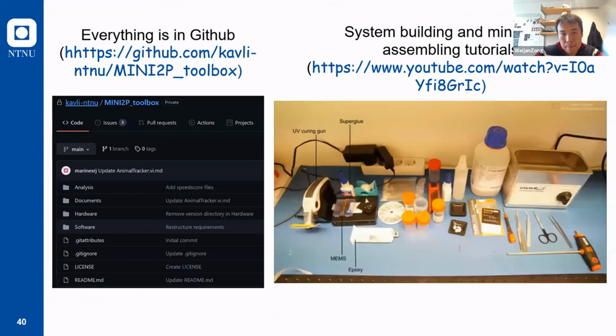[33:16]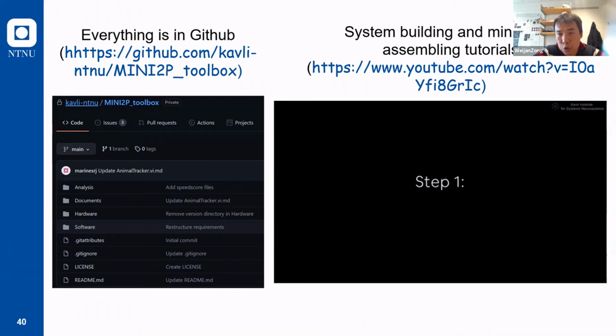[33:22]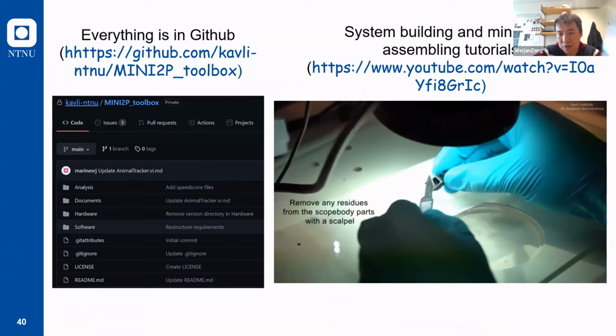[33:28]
And also we do not want the control to be really complex, or only usable if you have some commercialized software. So we try to use open source, or openly available, software to control our system. Now our system can be fully controlled without any customized functions by using ScanImage, which you can just download from the website. And we also provided multiple tutorials on YouTube, so you can follow them to learn how to make this microscope yourselves.
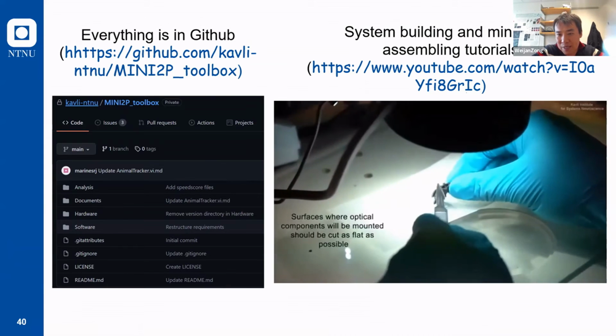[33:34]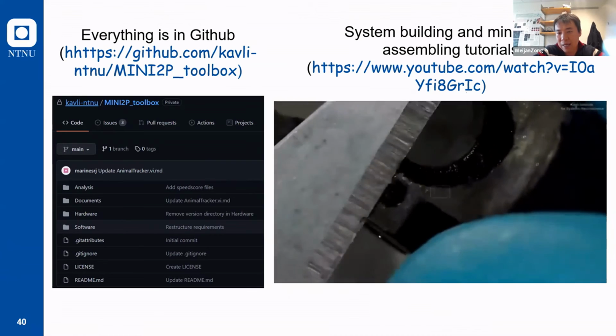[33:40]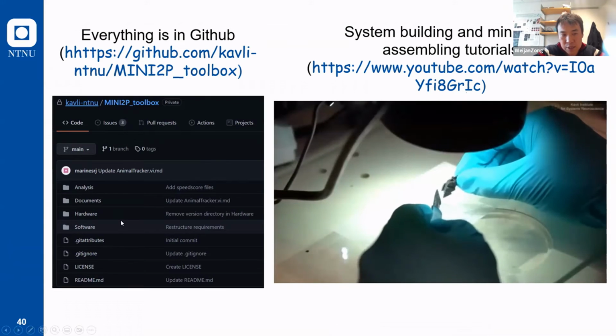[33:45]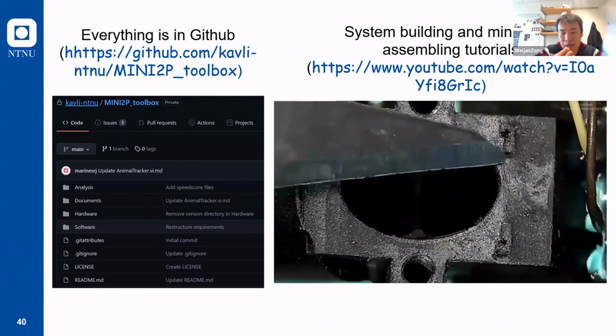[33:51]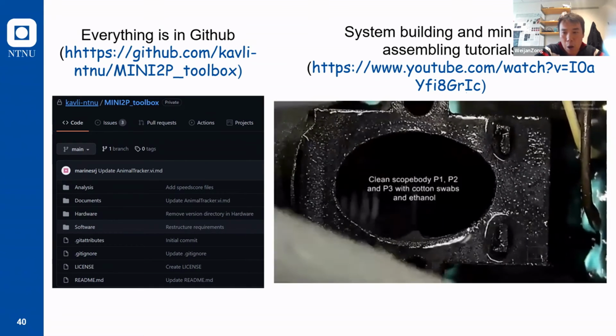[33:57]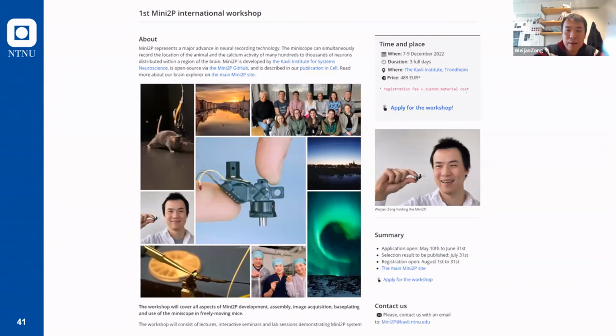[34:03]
But of course, I wouldn't say that everybody can successfully make one Miniscope that is working perfectly. At least you need to have some basic knowledge in optics and electronics. But you can download all the materials, for example the 3D models, all the assembling protocols, the control software, and the operation manuals, which are on the website. So everything is open. And moreover, we also realize that even if you open everything, not every lab can make sure they build up functional systems.
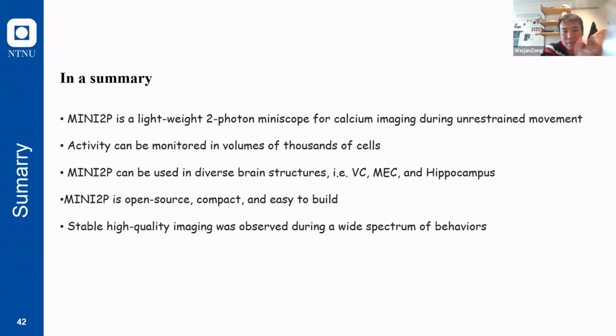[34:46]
So we decided to regularly organize a workshop, to invite people to come to our lab to learn how to build and use these systems. The first workshop will be organized this December, and next year we will maybe have 2 workshops in half a year. We just want to make sure that the labs who already bought the materials can build up the system themselves.
So in summary, we developed a lightweight two-photon microscope that can be used in freely moving animals for calcium imaging. We are now able to record thousands of cells in freely moving animals, and we can record from diverse brain structures. We ourselves show the recording of hundreds of cells in visual cortex, medial entorhinal cortex, and hippocampus. And the Mini2P is totally open source, compact, and easy to build. I mean, easy to build means at least you have some basic optical and electrical knowledge.
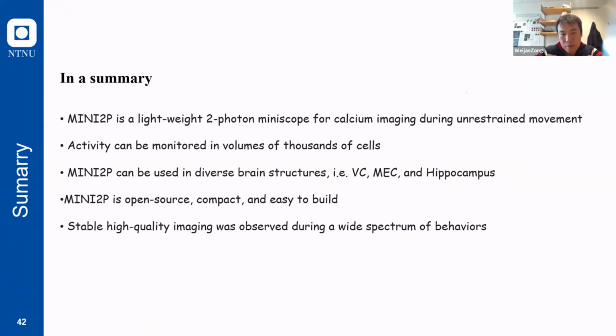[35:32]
And we can use this Miniscope not only in very simple open field tasks, but also in a wide spectrum of behaviors, such as climbing the tower or escaping behavior. I didn't show it here, but we indeed had a project working on that. This opens many possibilities for behavioral neuroscience.
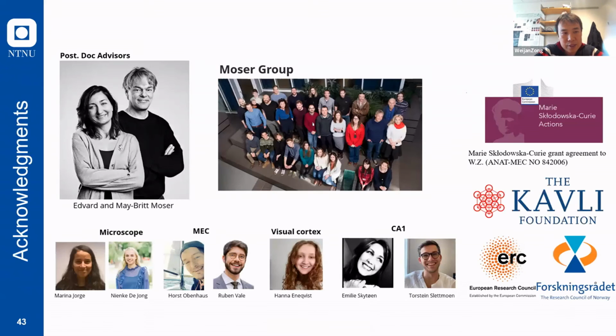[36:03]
And finally, I will thank the people who were involved in this project. First, my advisor in my postdoc career, and also all the colleagues who were involved in the microscope development and in the different biology projects, who helped me to make this proof-of-principle experiment happen. And I would also thank the Marie Curie Foundation, which supported my postdoc research, and also the Kavli Foundation, ERC, and the Norwegian Research Council, which support my current research. And I think that's everything I want to show, and it's now open for questions.
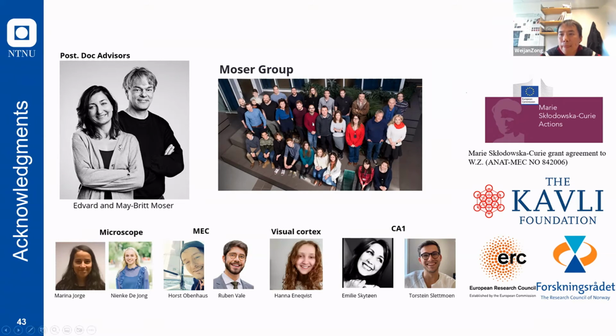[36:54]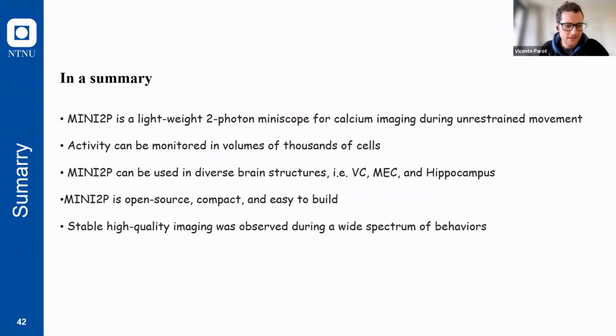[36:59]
Thank you, Weijian, for that tour on this fantastic journey of the portable 2P microscopes. I think with the weight study, you really highlight how important it is to have a very small, lightweight device, right? Yeah. So I have several questions, but I wanted to start first with a very basic one, just for orientation, in case anyone who watches has a question.
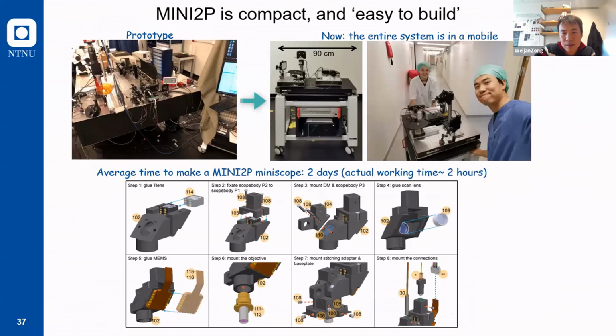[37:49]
So here, if I understand correctly, you have these small electronic devices that do the scanning of the focused light in 3 dimensions, correct? Yes. And then the detector is a photodetector that integrates all the fluorescence coming out, correct? Correct, yeah. Good, very good. And so this in principle is raster scanning, like a confocal, or the most traditional two-photon microscope. Yeah.
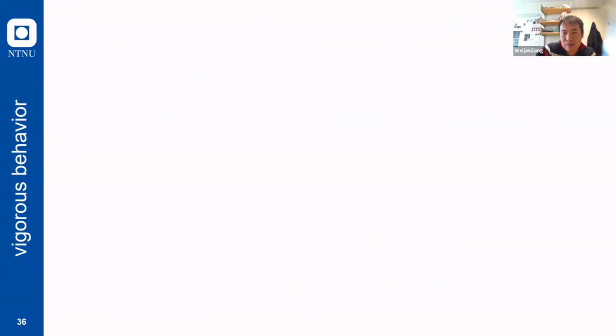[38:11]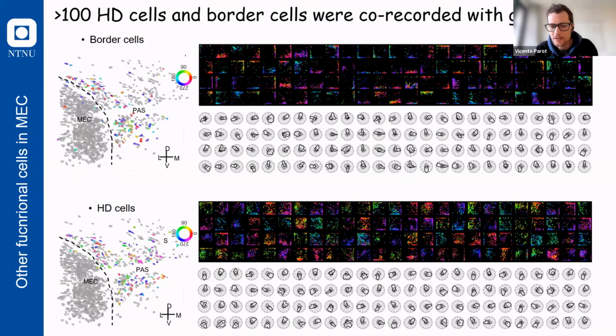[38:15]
Excellent. And so I also wanted to highlight another basic point. You showed one slide where you compare with the one-photon. So could you just very briefly remind us what's the most important difference between the one-photon Miniscope versus the two-photon Miniscope?
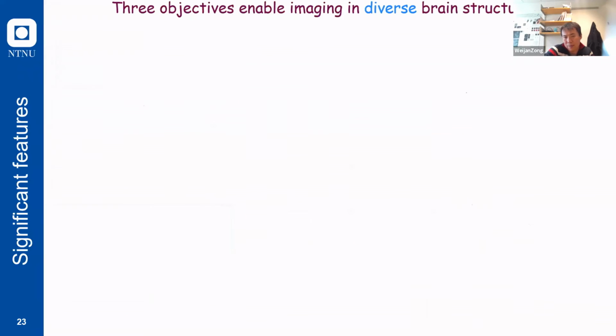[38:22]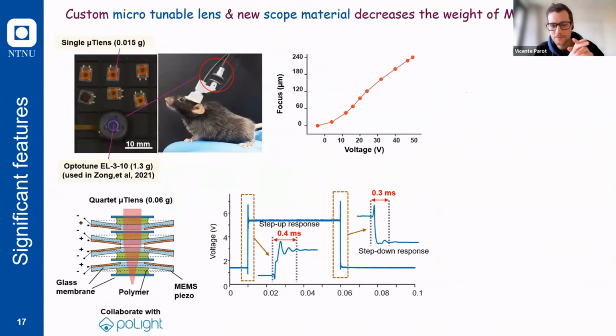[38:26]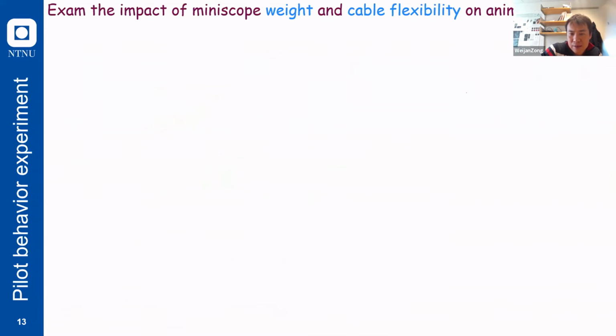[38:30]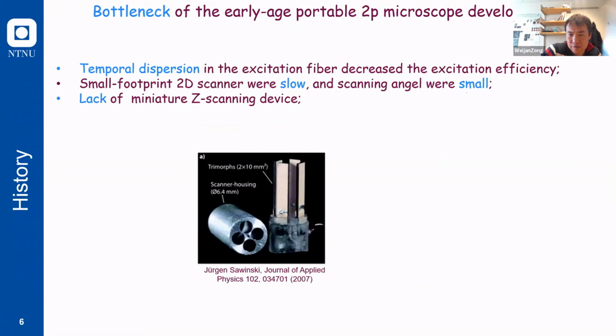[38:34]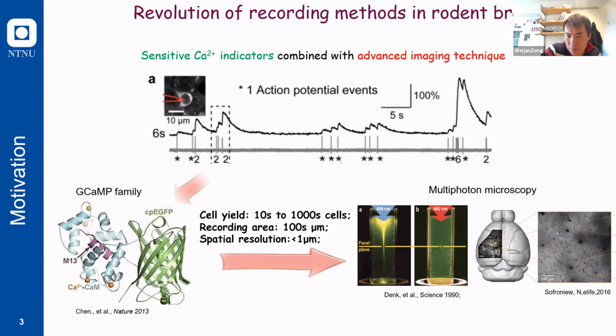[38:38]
Right. So I mean, how do you get so much better resolution, right? Exactly. Yeah, thanks for the questions. I think that fundamentally it's physics, right? So if you can still remember these
pictures, I think that's the benefit of the multi-photon microscope, because of this two-photon absorption effect, which means that the fluorophore has to absorb two photons at the same time to generate fluorescence, which is really a low chance. And you need really high power to make this two-photon absorption happen. You have to really focus your light into a spot, and also you need to use the femtosecond laser, which has really high peak power. Even with these two strategies, you can only get high signals in the focus, which means that all the out of focus places will not have fluorescent emission, and this really confines your signal to only come from the focal plane.
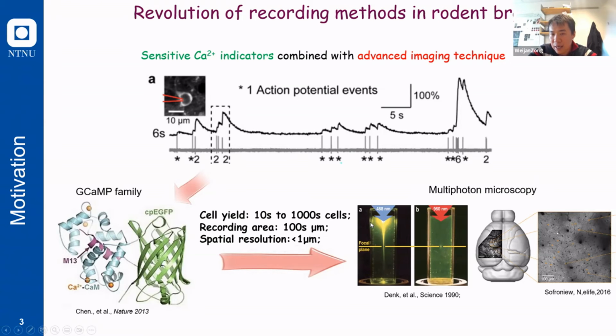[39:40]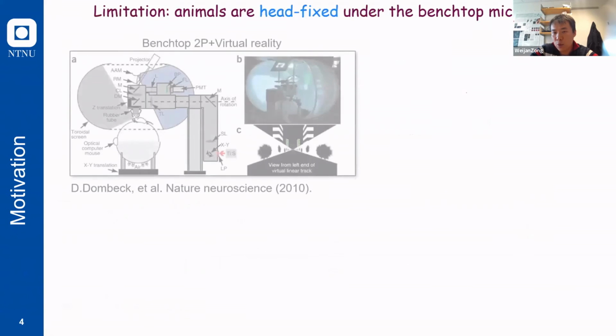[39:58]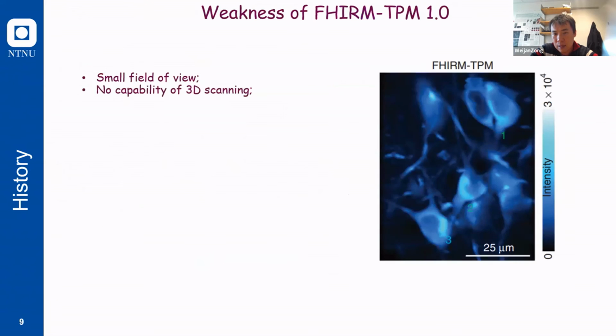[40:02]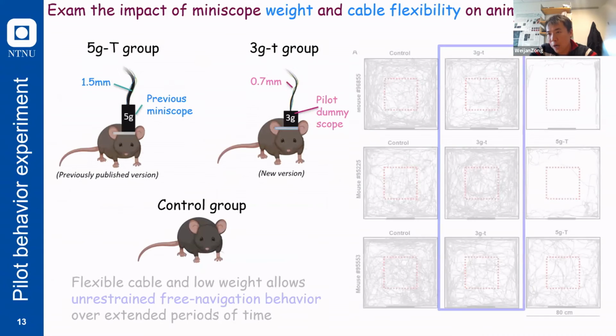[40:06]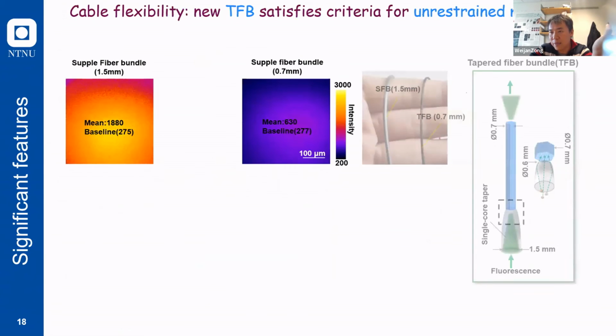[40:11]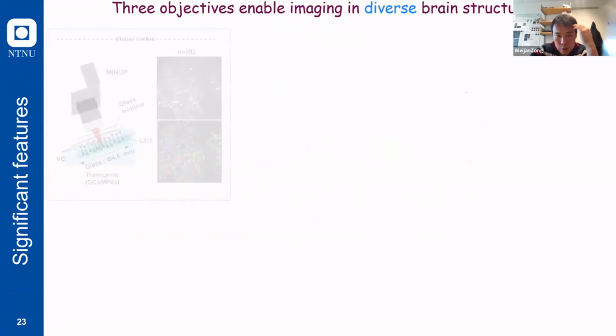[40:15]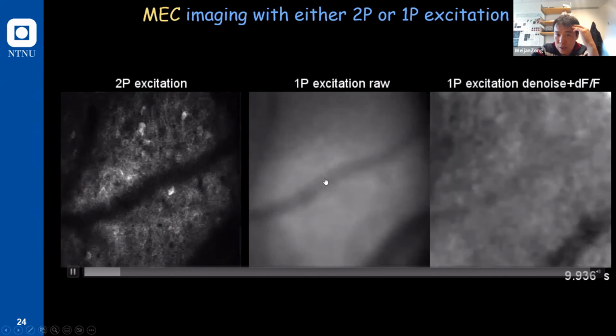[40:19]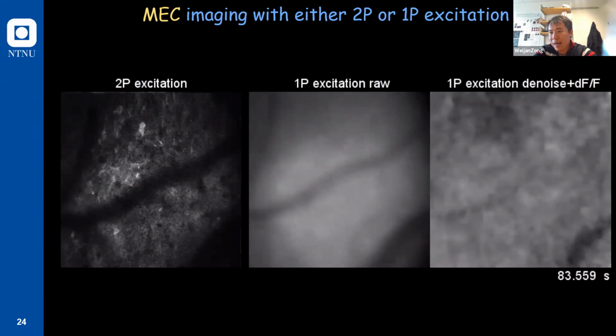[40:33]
In contrast, if you're using one-photon imaging, all of this background has fluorescence in the brain, and that will emit photons. All of this out of focus emission will just increase the background noise, which is exactly what you see in these images when you use the one-photon miniscope, which is still quite popular now because it's so simple. It just needs an LED in the miniscope, and it just uses a small camera to detect the signals. But you can see that it's exactly the same field of view, but you have really, really strong background, which decreases the capability to extract a signal from single cells. But if it's two-photon, all the signals you see are from one section. And that is the biggest difference. And that really gives you a high resolution.
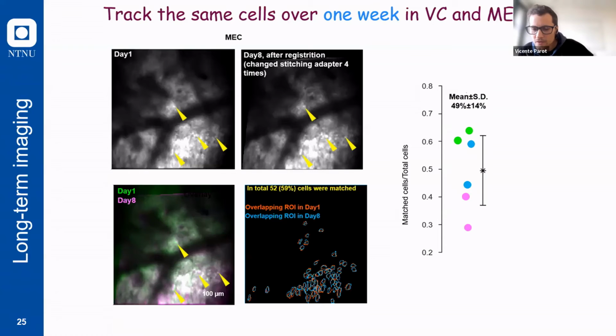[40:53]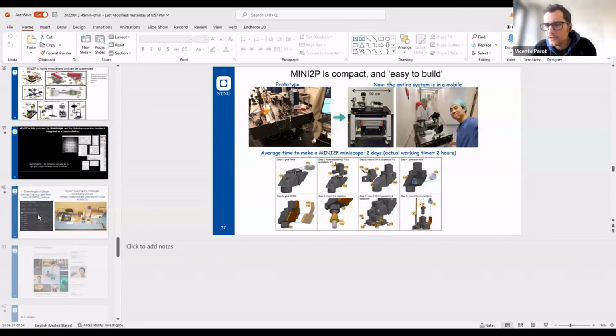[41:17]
Good. So I think probably a question that many people will have. As you said, there are many users of one-photon miniscopes. We have one question here from Isabel, who is in the audience. She presently uses the one-photon miniscope, and her question is, what will be the approximate cost to build one mini 2P miniscope? And I guess the most important cost is probably the two-photon light source, right? But besides that, what are the costs involved in the device that you use?
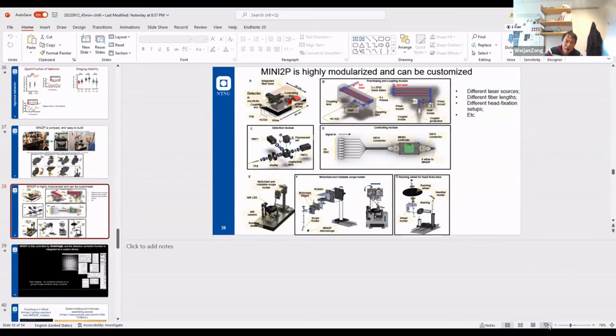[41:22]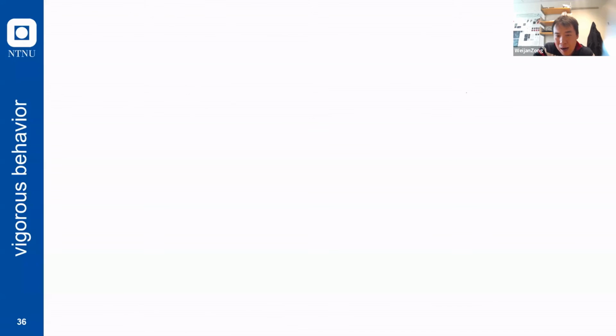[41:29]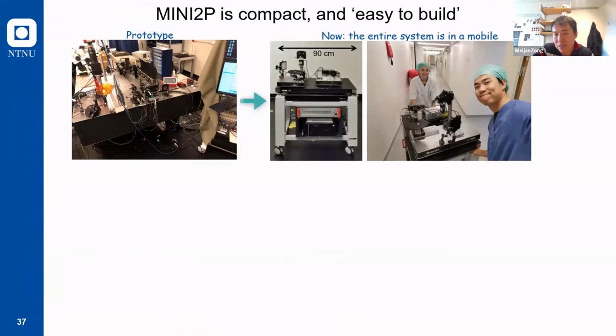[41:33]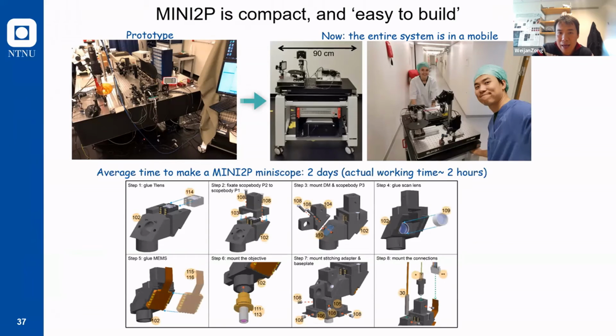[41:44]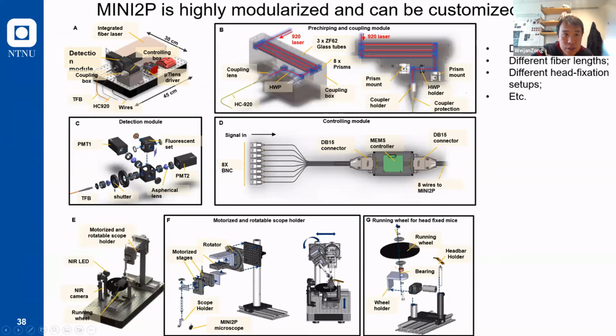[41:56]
Yeah, correct. This is the question I get every day from email. First of all, I think the cost must be much higher than the open source version of the mini one-photon, say the UCLA version or other open source versions. And you are right, the majority of the cost comes from the laser. I think the laser we are using now is a fiber laser, which is already much cheaper than the Ti:sapphire laser that is commonly used in the two-photon microscope, but it still costs maybe $60,000, something like that.
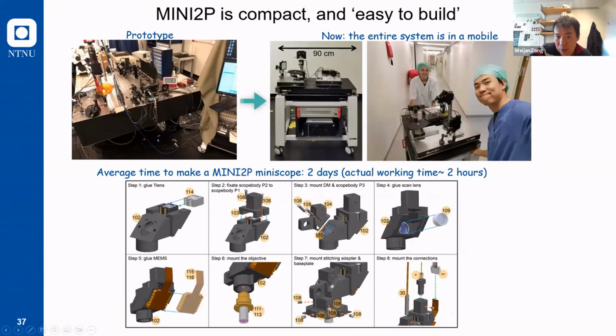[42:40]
Without that, the other components are just some glass, some prisms, and that can be like $10,000 or $20,000. So that's the system cost, right? It is higher. But if you already have a two-photon laser, then you can cut off a lot of costs. For one miniscope, the cost depends on how many miniscopes you want to make, because the objective costs the most in the system, and one objective probably costs maybe $3,000 or $4,000. But the beauty is that this objective can be reused, just like in a confocal or two-photon microscope. So in principle, you could buy one objective and use it in different researches. And the microscope itself could be maybe less than $1,000 or $2,000, and that's quite affordable for most neuroscience labs.
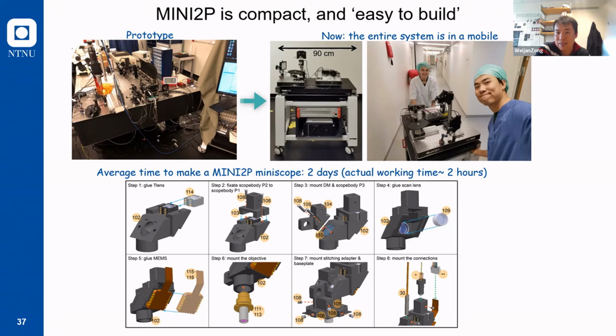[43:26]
Also, miniscopes can be reused, which means that you probably only need to build one or two miniscopes in the lab. That is different from electrophysiology probes like tetrodes or Neuropixels. But you can make the comparison yourself to the mini one-photon.
Yeah, very interesting, all this hardware. So Pierre, did you have any question? Yes. First of all, thank you, Dr. Zong, for your talk. It was really interesting. I would like to know about the motivation for why you decided for this technology to be open source, using open source principles, because it's common to see open source standard bio instruments, but in this case, this one is a highly specialized instrument. So what was the motivation for this technology to be open source?
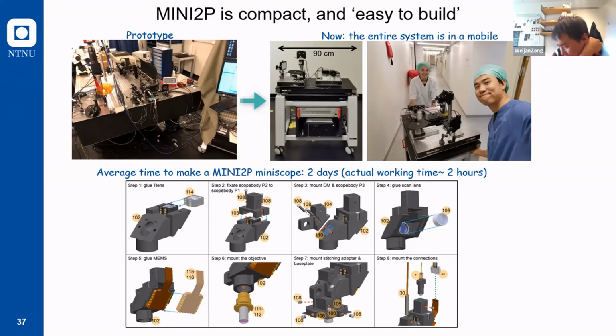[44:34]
Yeah. Thanks for the question. Well, there are a lot of good reasons to be open source, right? I think that's a trait in neuroscience.
First of all, we want to spread this technique. And since we do not plan to have a company to sell this component ourselves, of course, they may have a company exist. They build up the commercialized version of this Mini 2P. I know them both in China. They also have a company. So if you really want to buy a system from a company we do not want to run ourselves, you can.
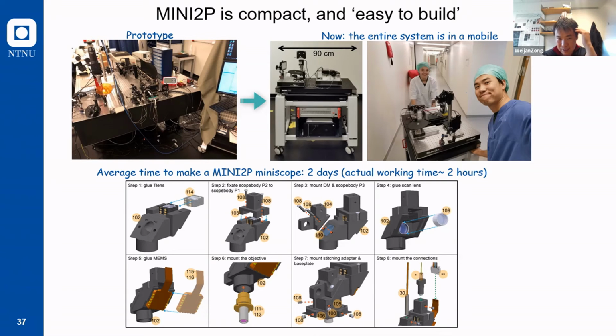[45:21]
But we realized that before tools become standardized, like a confocal or whatever, you need to have more validation. So you need people to build it and use it in their research and report the usable perspective of this system. Then people can believe that they want to use it. And that's our motivation. So we want to open source, and then neuroscience labs can start to build it themselves, use it in their research, and support this technique. That's the first motivation. The second motivation is that we also want to involve more people to develop these systems.
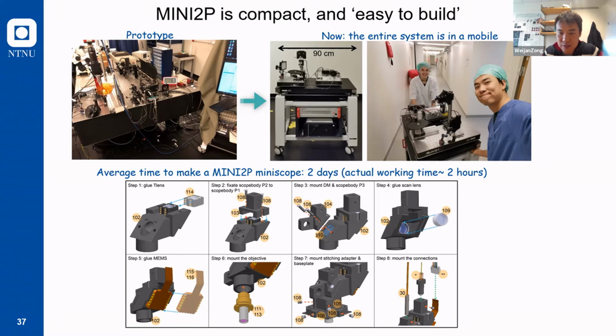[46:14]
Because finally, this system, as we say, is a specialized system for neuroscience. And it's even more specialized if you consider that everybody will have different projects. They may want to image different cortex. They may want to do different tasks. So they may modify these systems. And if you just give a commercialized system and they do not dare to do any modification, then it's useless for their research. Which means that we want people to know how to build this system themselves, so they can modify it. They can increase diversity, and they can also further develop the system, because this system is not at the end yet.
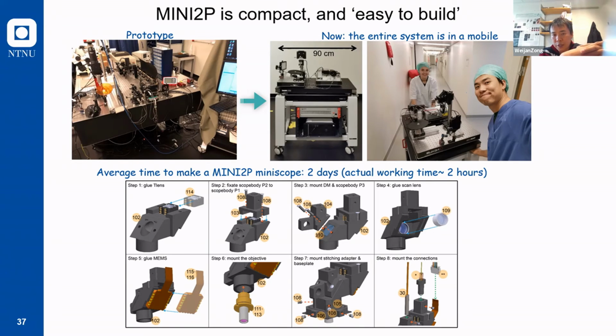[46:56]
We still want to increase the field of view. We still want to do deeper imaging. We still want to have a lot of features. So we want to expand the developers of these systems. That's why we want to open source it. Those are very good points.
So I had further questions around the same topic. I'm thinking of some neuroscience lab, maybe one that uses 1P Miniscopes already. They have the behavioral task and so on. They want to use now the 2P Miniscope. Do you expect most of those users will have an engineer who builds the 2P Miniscope, or do you think it's more common they will buy one from a company that provides all the parts, for example, even if they are open source?
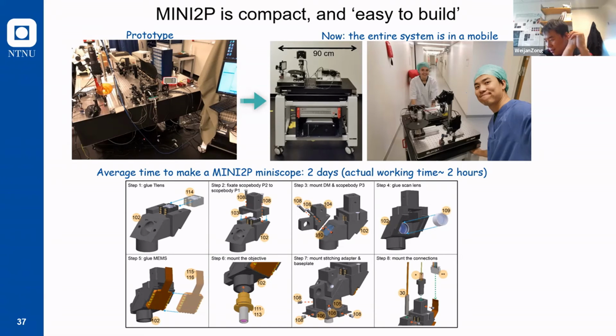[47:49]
Yeah, well, first of all, you of course need a motivation to move to 2P, and the motivation is that it gives you a higher resolution. You can have the 3D scanning capability, so you can distinguish the cells in different layers. But the 1P ones still work well in some cortex, like the hippocampus, because the hippocampus is very thin. Or if you have some sparse labeling strategy to decrease the background signals. But after all that, if you really want to use 2P, yes, currently I think you probably have to learn how to build it yourself, either by communicating with us, applying for our workshop, or just learning from YouTube and the papers.
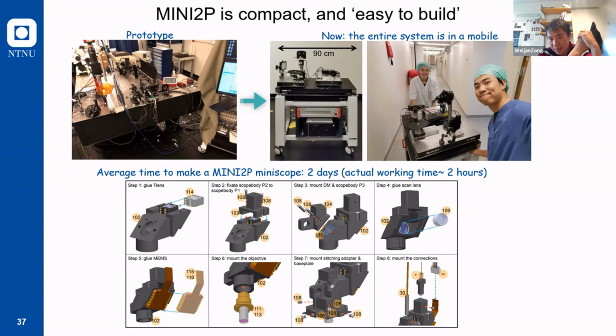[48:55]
But in the future, we have some plans. We are trying to build an imaging core facility. And actually, we are recruiting an application scientist who will first learn how to build the systems, and then help the users in the world. He will train people in the world how to build and use the systems, and he may also fly to the labs to help them build these systems. So that's in our plan. But currently, probably the best way is to just try to learn how to make it yourself.
But also, of course, many companies are interested in building these systems. Even if we ourselves are not interested, we still think it is valuable to have some company provide a service on building them. And I know that now there is one company already starting to sell packages of these Miniscopes. They don't provide the building and the testing, but they are already selling the packages, and it is called Lab Maker. You can check that.
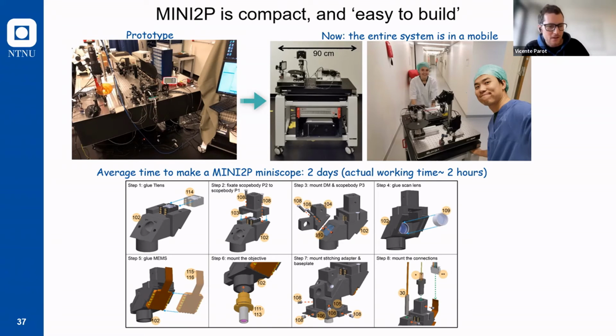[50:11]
Very nice. I have a couple more questions, but first let me ask if anyone in the audience has any question about the scope they might be interested in.
I have one. In this case, which are the following steps for the Miniscope in terms of hardware? So what do you expect for the next years? What do you think you would improve? I don't know, for example, using other models maybe, or improving the user interface to get more data.
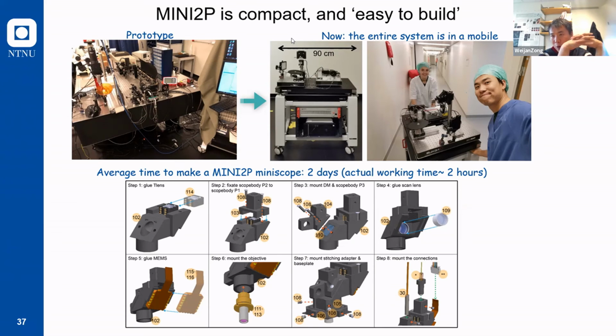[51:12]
Yeah. So, thanks for the question. From the application perspective, we want more people to use it. We already built up a collaboration with 5 labs, I think 1 in America and 4 in Europe, and they agreed to be the validation site, which means that we will help them to build up these systems, and they will use this system in different animal models. And I know that one of them is using this in birds. So we hope to help them to establish this method in different models.
And we ourselves will also use this method to image different cortex in the brain. We now have, I think, 5 or 6 projects targeting different cortex, including MEC, hippocampus, and visual cortex. And from the development perspective, I will continue to develop it myself. That's my major research interest, and we hope to further increase the field of view, because the current field of view is 500 by 500 microns, and you can get around 1,000 neurons at best, and we hope to increase it to more than 1 millimeter.
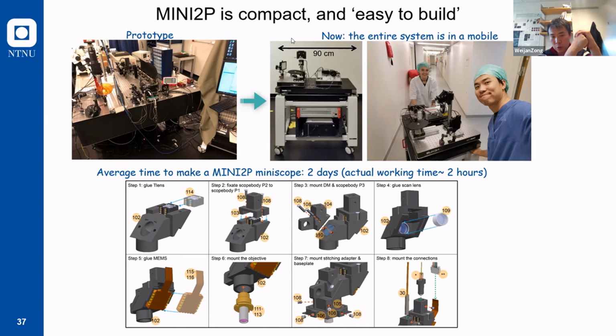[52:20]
Of course, we also want to go deeper. You know that the 3-photon Miniscope is under development in other labs, and we're also interested to explore a little bit of that direction. And we also want to do multicolor imaging, which means that we want to introduce multi-laser line excitation. So all of them are in our plans, and the development is still going on.
Thank you very much. So we probably can have a few more minutes of questions, and I think I see some questions in the chat. Yeah, we had one before, and I read it before, but okay. If there's any other question. Oh yeah, sorry, unmute. Sorry to jump in.
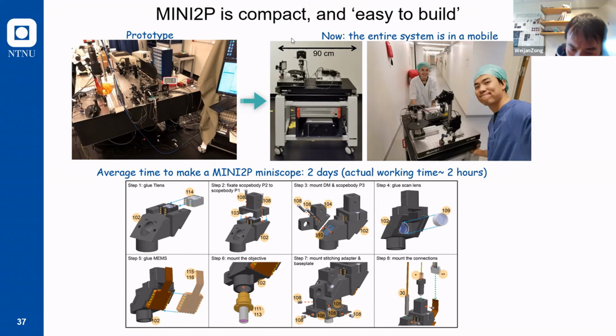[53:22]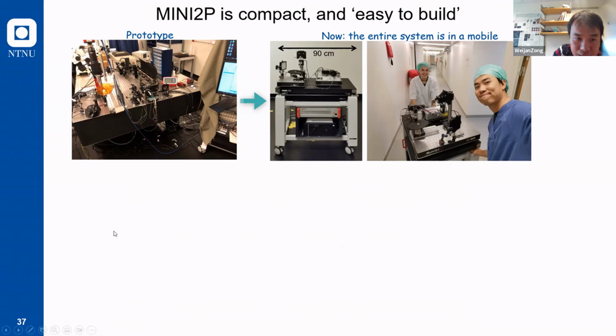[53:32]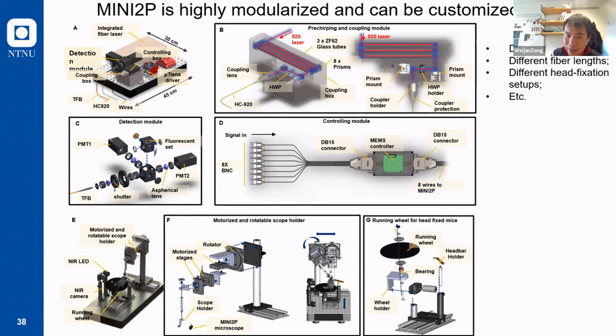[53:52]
I think I forgot to answer the last half question from Isabel, about dual channel. Currently, the detectors are PMTs, which are on the remote part. The detector is not integrated into the Miniscope, which means that we can record as many channels as you want. You just add more PMTs. And currently, the excitation is 1 wavelength, which is 920. At 920, we can record some fluorophores, for example GCaMP, and at the same time, because most of the time you only need 1 laser wavelength in 2-photon imaging to excite multiple fluorophores, we can also excite tdTomato, mRuby, or some RFP with the same laser, which means we can do multi-channel.
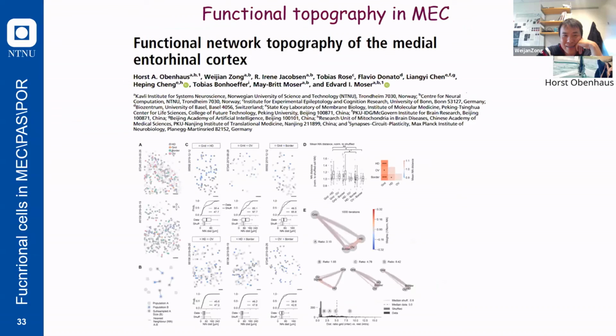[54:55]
Good. So I also had a neurobiology question about some of the results you were showing, which I thought were incredibly interesting. Specifically, of the cells that you observe with activity correlated with the behavior, in those areas that you looked at, how many active cells do you find that are not grid cells or head direction cells or border cells? Exactly, that's a good question.
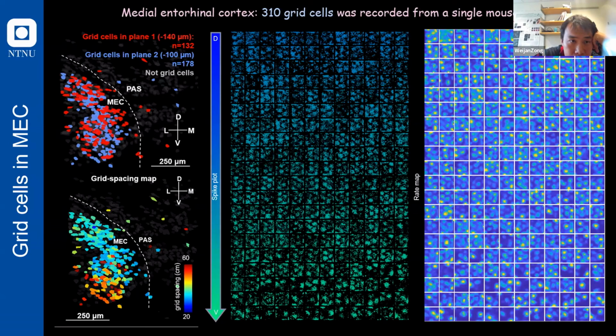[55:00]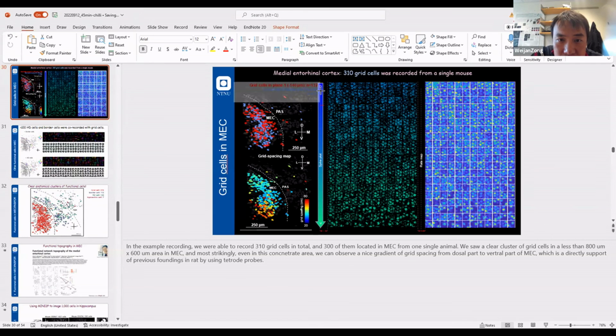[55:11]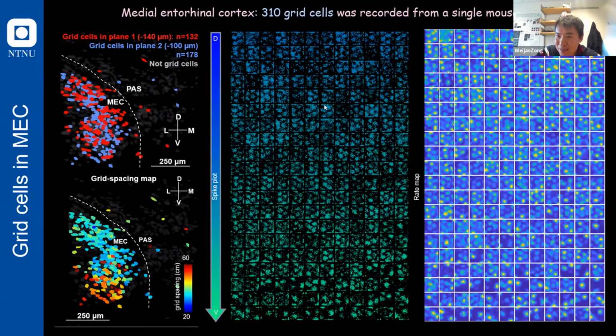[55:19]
I think I have the data here. Anyway, we found it really depends on where you implant your prisms, and it's highly variable. In what we call the hotspot, we found about 37% of the cells are grid cells in this particular region. That also fits our observations from the Neuropixels recordings and my colleague's open-field studies. But the rest of the cells in this region are not really head direction cells or border cells, which means that the grid cells are really confined and occupy a specific territory here. Some of the rest of the cells have some spatial tuning, but we cannot classify them as any classical spatial tuning cells like grid cells or head direction cells.
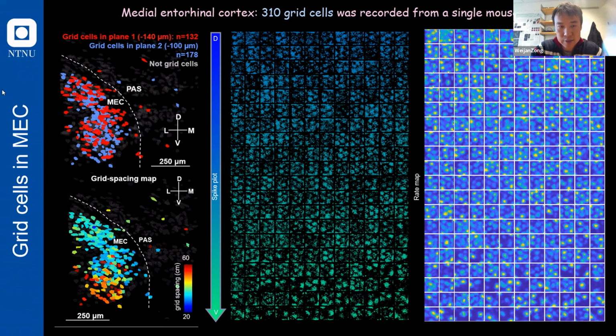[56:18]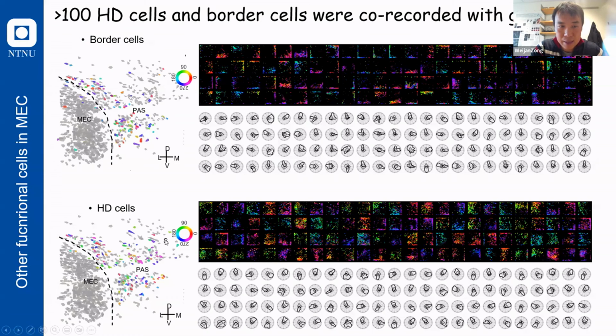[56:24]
And in this parasubiculum, and also even other faraway regions, the majority of cells have head direction tuning. I forgot what the percentage is, but I believe it's higher than the grid cell ratio in MEC, but really fewer grid cells there. And the percentage of spatial tuning in visual cortex is much less. They still have some, but much less. So that's the picture by region. But it really depends; sometimes we have an animal where we don't hit a very hot spot, and we have 0 grid cells. And we still don't know why that happened.
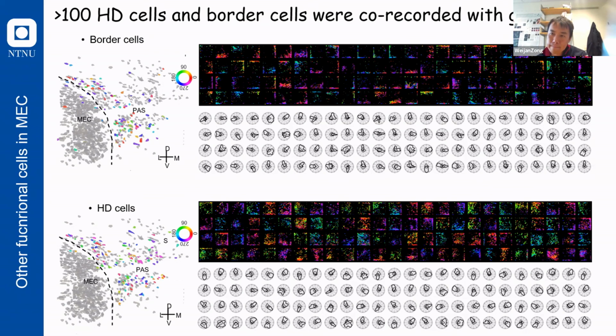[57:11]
Fascinating, yeah. We look forward to reading more about this in some of the reports you're publishing.
So finally, I had another question. You have shown here very incredible new knowledge about observation of the activity, right? But in your description, you say that you're working on new approaches for using all-optical methods for functional connectivity characterization. I was curious because you didn't mention any of that in the talk, so I wonder if you're working on that direction now, and what you are doing in the direction of all-optical mapping of functional connectivity?
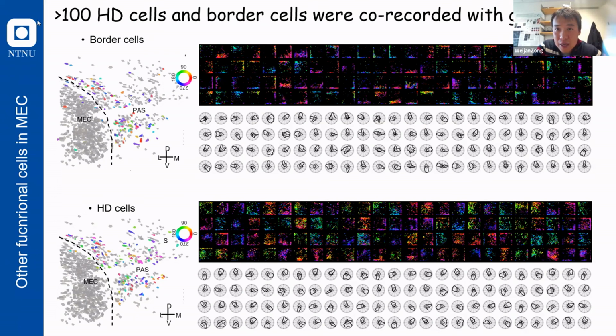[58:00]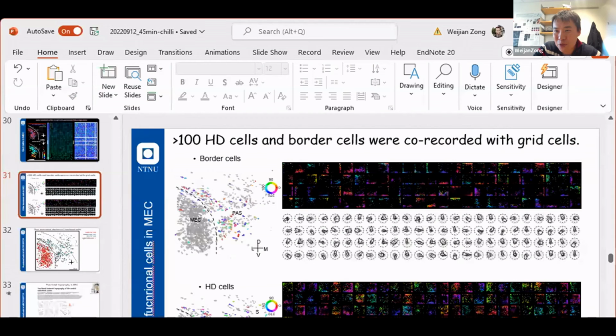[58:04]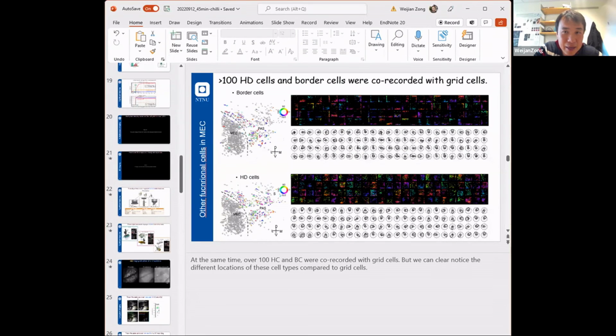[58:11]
Let me think. Let me check if I have it. Yeah, because I wasted some time because of the time zone, I decided to just skip that part. But maybe I can quickly show you some of the results.
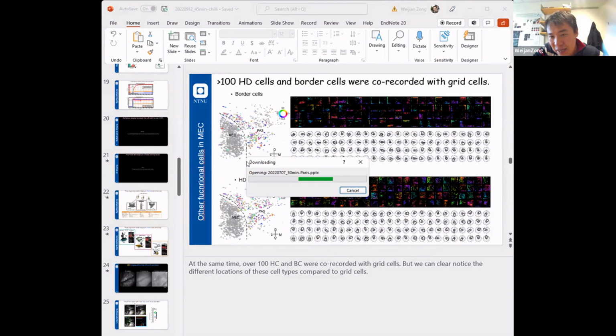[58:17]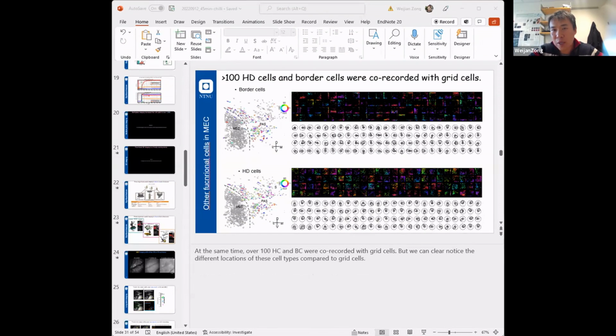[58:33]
So the idea is that we want to measure whether the grid cells, because we are really curious about how these grid cells are generated, right? We know that grid cells have this beautiful hexagonal pattern of grid fields, and some grid cells are really similar to each other, some are really different from each other. One theory of the origin of the grid cell is the continuous attractor model. And a lot of people are using this computational model to explain how the grid cells are generated.
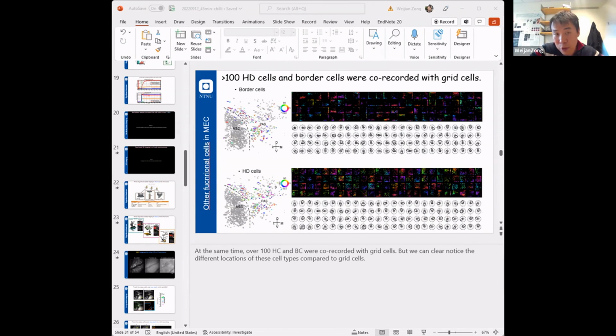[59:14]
To be brief, this model provides a hypothesis that grid cells that are quite similar to each other should have really strong excitatory connectivity between each other. And grid cells that are quite different from each other shouldn't have this strong connectivity, or they have really weak, or even the opposite, inhibitory connection to each other. And we want to test if this is the case. That's the motivation. Of course, with the Miniscope, we can currently only observe the activity, and we're not able to manipulate the activity.
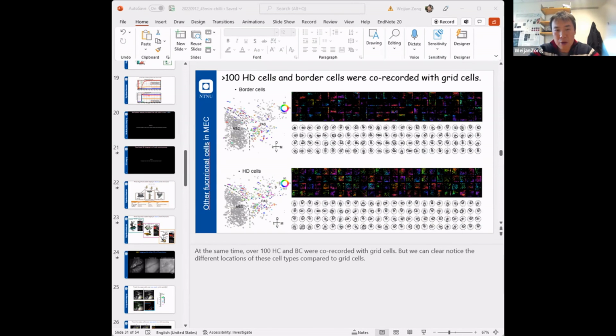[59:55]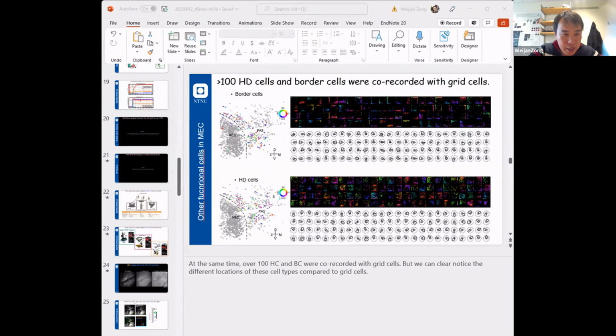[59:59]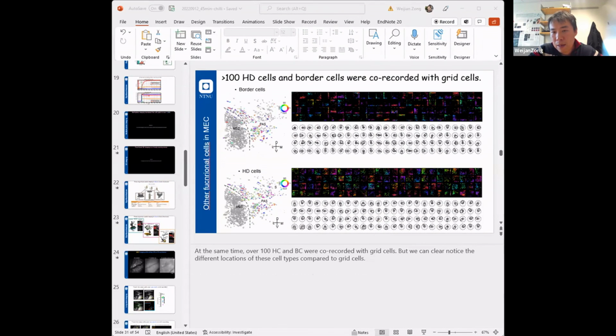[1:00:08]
So in order to test this hypothesis, that is what I'm currently doing. Using optogenetics, we want to combine this Mini2P imaging with a benchtop two-photon stimulation and imaging system. We will first use Mini2P to record and detect these grid cells, and then we have another customized two-photon imaging and stimulation system, where we have head-fixed animals, and we try to align or register the field of view of Mini2P to the benchtop. In this way, we find exactly the same grid cells in the benchtop system, and we also express the opsin in the grid cells, and then we start to stimulate the cells one by one.
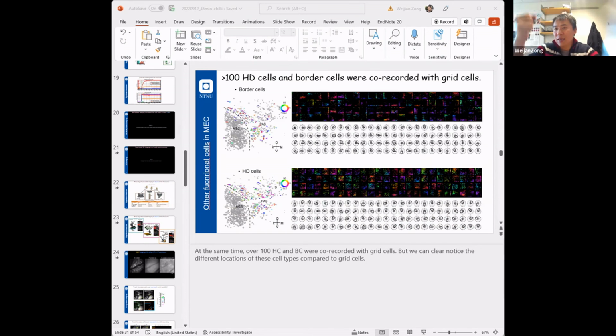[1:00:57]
The idea is that if the cells are connected to each other, when we stimulate the presynaptic cells, we should see a postsynaptic response. And if we see this response, we know that they are connected to each other. So we want to use this method to test the functional connectivity. That's the current goal. But this is really at a beginning stage. We haven't got any meaningful biological data yet. That's why I skipped this part. But I hope you understand the idea.
Yeah. Of course, a very interesting topic for the future. And if you also want to do this stimulation in freely moving animals, there you have many other technical challenges for the future. Yeah, we have a plan, but we don't have any very clear idea yet on how we can do this stimulation cell by cell in 3D in the moving Miniscope. Of course, we need fast stimulation. If you just want to stimulate one by one at a slow speed, it's possible, but we want to stimulate very fast, and we haven't started this project yet.